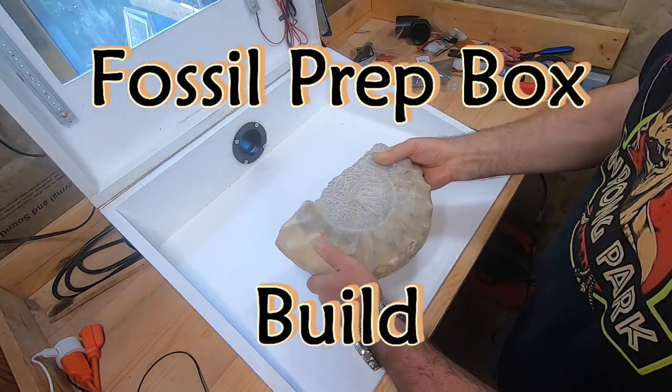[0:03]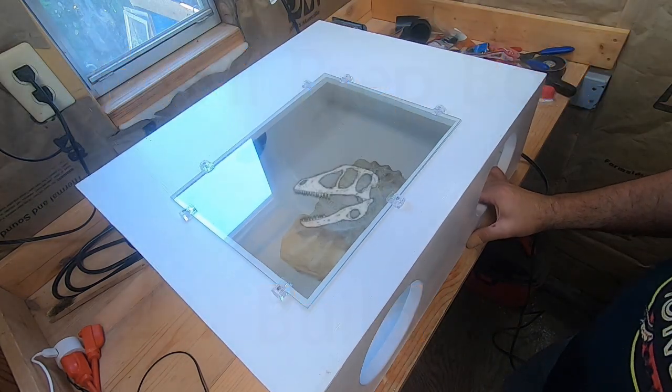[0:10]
Hello and welcome back. If you've been thinking about building your own fossil preparation box like this one, then stay tuned because I'm going to show you the steps and supplies that you need to build one.
In my last video, I showed you the considerations for the tabletop height for your prep area when you're working with a microscope. And I also made a test box out of cardboard to make sure everything was going to work. Test box was good. Height was good for working with the microscope. So now it's time to actually make the box.
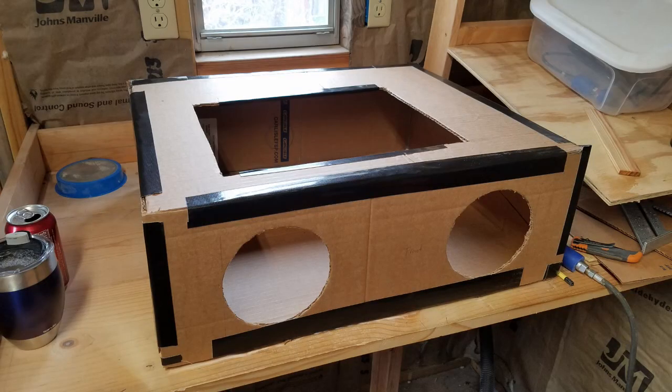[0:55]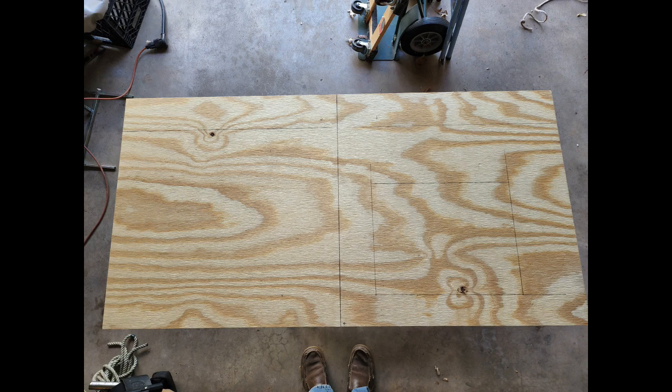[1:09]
The first step to creating your own prep box is to decide on the dimensions that you need. For the amount of space that I have available and the requirements while using my microscope, my box dimensions are 24 by 20 by 8 inches. For a box this size, it turns out that a quarter sheet of plywood is almost perfect. It winds up being a fraction of an inch shorter in length, but that was a trade-off I could live with to use a smaller and cheaper piece of lumber.
The plywood sheet will form the top and bottom of the box. Measure and mark the cut lines. Remember the old saying, measure twice, cut once. It might save you a return trip to the lumber store.
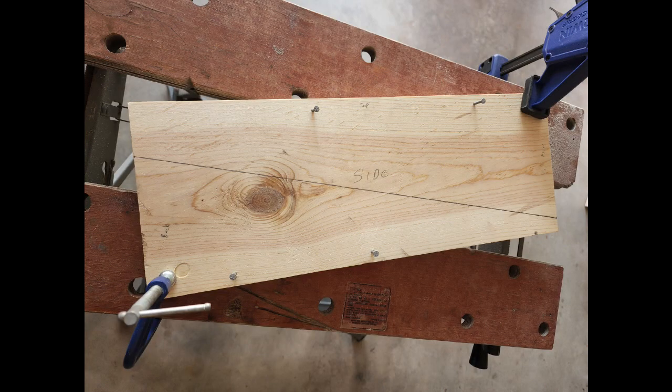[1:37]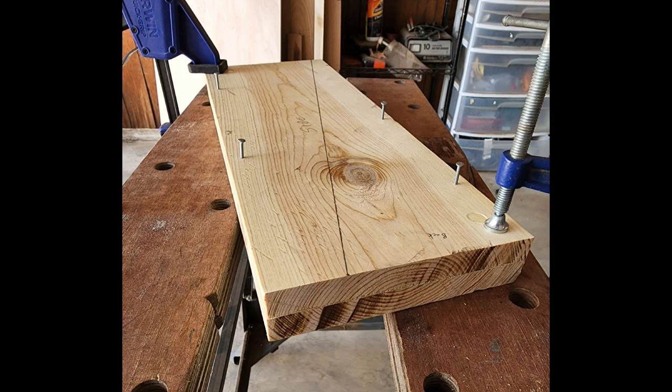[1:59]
Next, cut out your sidewalls. I started with a 7 by 18 and a half inch pine board. Because of the clamshell design of this box, you need to make sure that your side pieces are identical. If they aren't, you could have trouble with the top not closing completely, or you could have a large gap along one side. In order to make sure that my cuts were the same, I aligned the two sides, then screwed them together. As long as your screws are in the top and bottom half inch, you can use them for running assembly screws later.
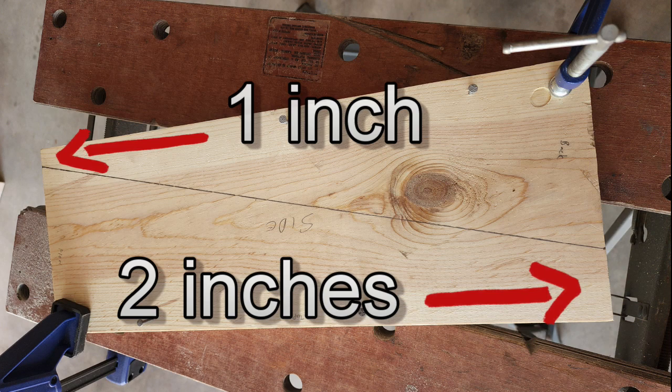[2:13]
My cut line marks are 1 inch from what will be the front bottom and 2 inches from the back top.
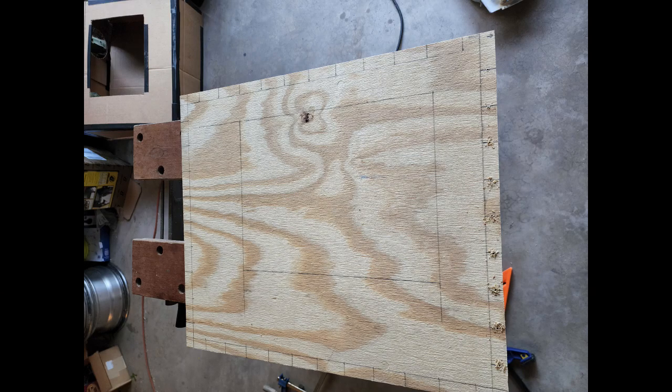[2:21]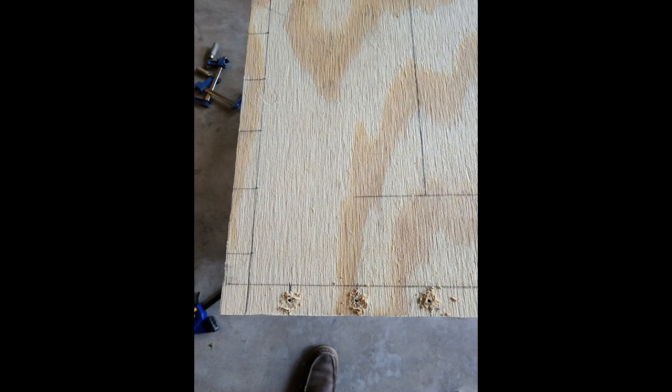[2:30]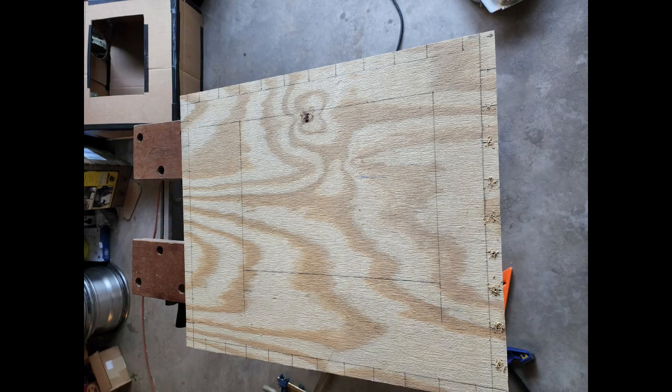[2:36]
I find it helpful to lay out and pre-drill the assembly screw holes in the top and bottom pieces. I started out with way too many screw holes on this side. You only need a screw about every 3 or 4 inches. I find the easiest way for me to get the holes centered is to mark out the width of the boards these will be mounting to. Fortunately, small mistakes like this can easily be filled with a tiny amount of wood filler putty.
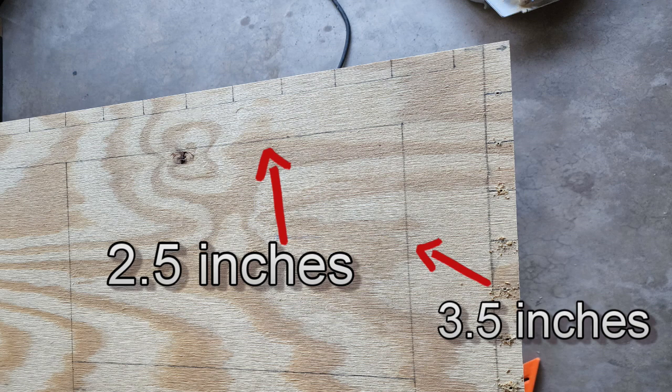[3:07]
I also marked out the cut lines for the viewing window. The easiest way is to lay your glass sheet where you want it, then mark the outside lines. Then measure about a quarter inch inside of those lines. I used a standard sized 11 by 14 picture frame glass for ease of replacement. My window is set 3.5 inches off the left side and 2.5 inches back from the front edge.
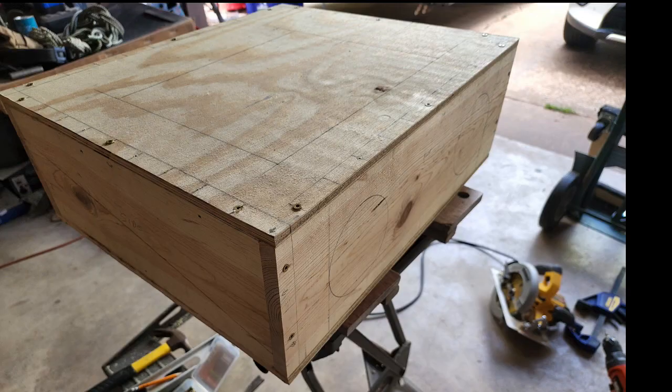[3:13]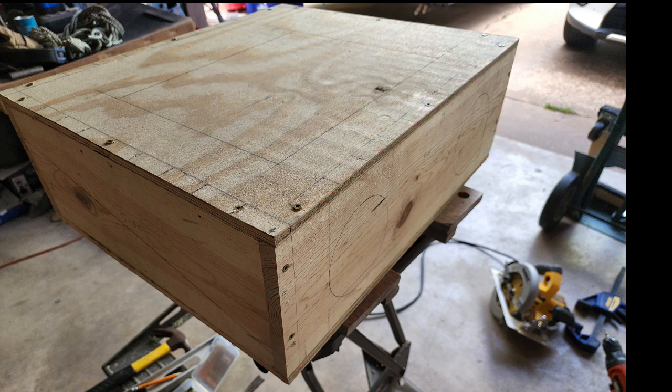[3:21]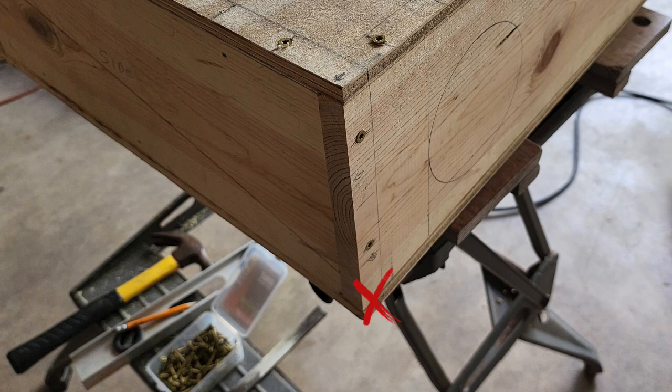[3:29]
The front face board is a single 24 by 7.25 inch piece. It should be mounted to the underside of the top of the plywood and to the front of the side pieces only. If you screw it to the lower piece of the side panels, it won't be able to open.
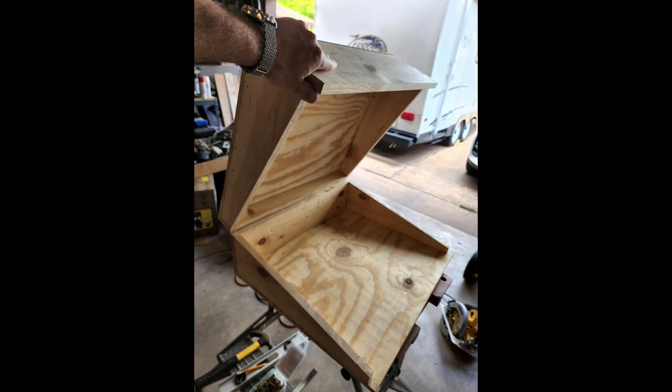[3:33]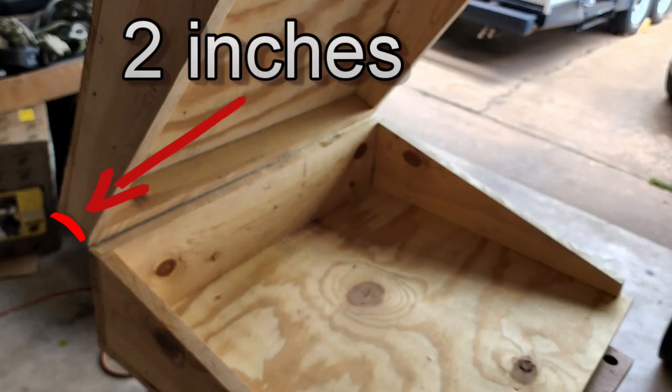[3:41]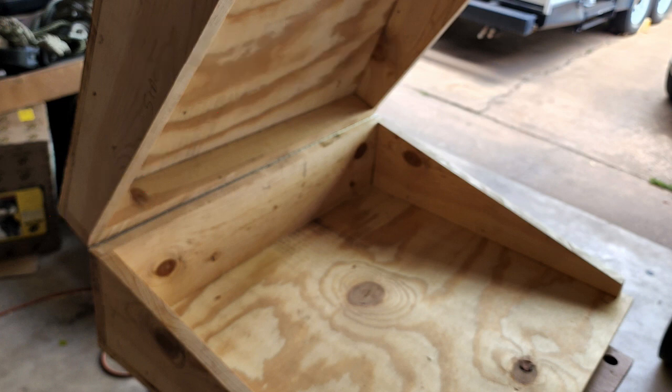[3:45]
The back hinged panel is the same dimension as the front, but you will cut it lengthwise 2 inches down from the top edge. This will mirror the back end of the side panel cuts. Assemble the top and bottom of the hinge panel to the top and bottom portions of the box like this.
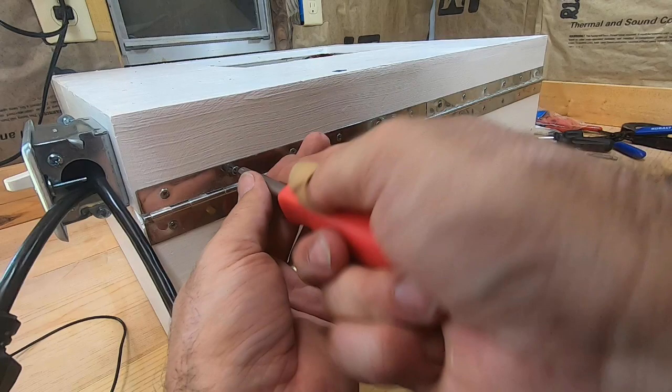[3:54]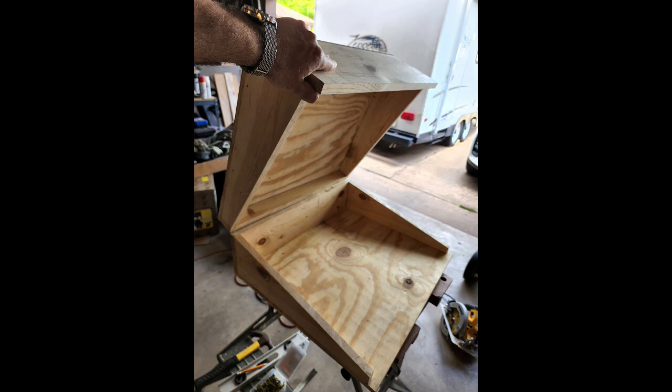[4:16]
When mounting the piano hinge, be sure to carefully line up the center of the hinge on the cut line of the panel. Start by loosely mounting 2 or 3 screws in the top and bottom mount holes and make sure that the box will open and close properly. Tighten the first screws down and again check the operation of the hinge, loosen and adjust if needed. Once the lid opens and closes smoothly, then mount the remaining screws. Don't worry about tightening them down all the way just yet. If you plan on painting the outside, you will want to remove them anyway.
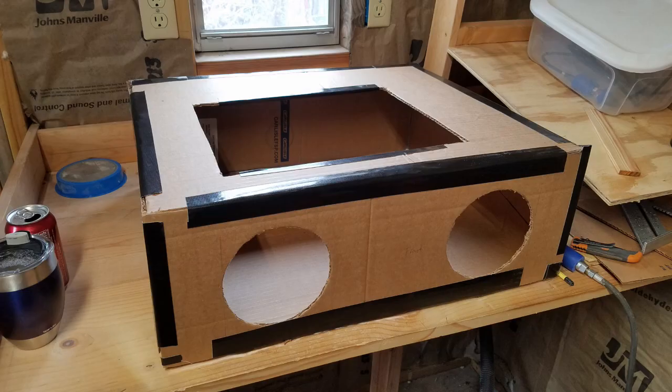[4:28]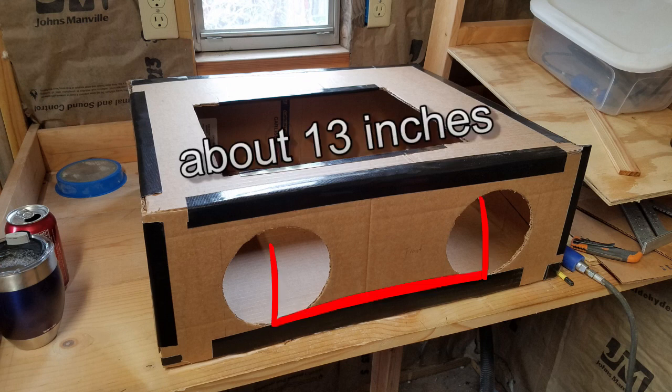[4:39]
Next, plan where you want your armholes to be. Since this is a rather shallow box, there isn't really an up and down decision. You want to make sure that the holes are spaced apart to be comfortable to rest your arms in them. If the holes are too narrow or too wide, it will be very uncomfortable to use the box for long durations.
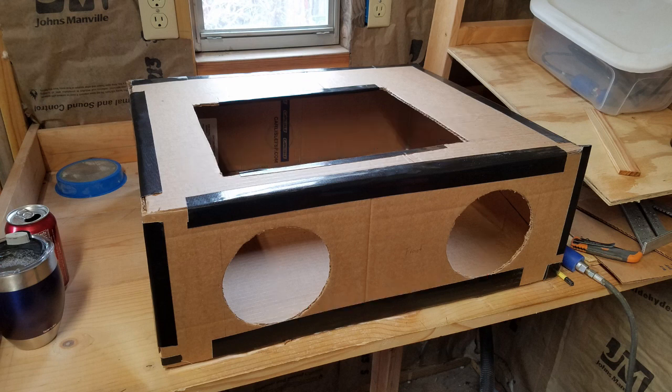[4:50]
The diameter of the holes depends partly on your needs and partly on what your end design will be. If you are just leaving the holes bare, you can make them whatever size you want, as long as they fit the board. You should leave about 1 inch on the bottom, since the front panel is also the closing lip of the box. If you are planning on using pre-made blast cabinet sleeve mounts, then use those as a template for marking the cutting line. Just make sure they are centered on your armhole dimension measurements.
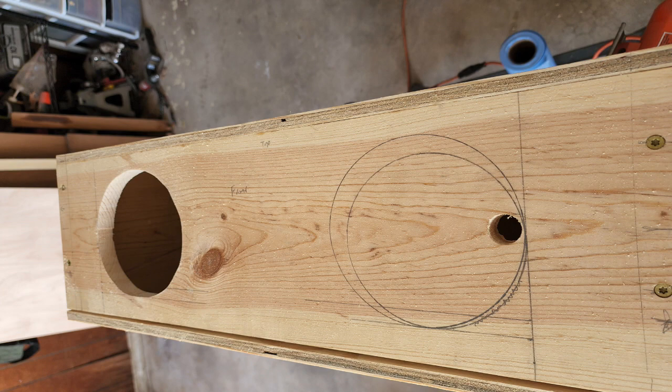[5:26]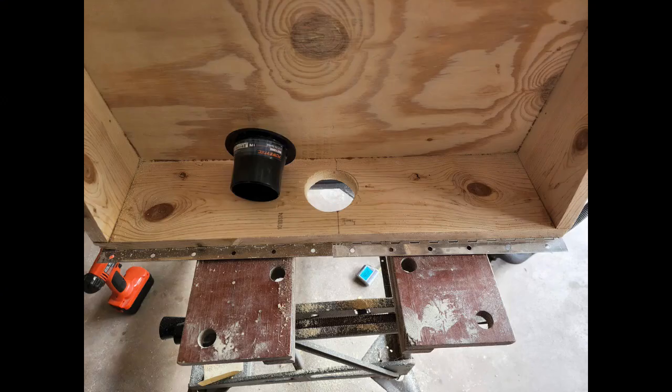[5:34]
Start by drilling a hole on the inside edge of the cutout. You can use this as a starting place for your saw to cut out the holes. You will need to cut a hole for the vacuum attachment at the rear of the box. Roughly centered in the rear panel, but exact location isn't important. You can put it anywhere along the back or side of the box that works best for you.
The shop vac hose mount I used was 2.5 inches outside diameter, but slightly flared near the base, so make sure to take the wider size into consideration, or you can use a round file to widen the hole a little bit more to allow it to fit. My shop vac hose end fits perfectly inside this mount.
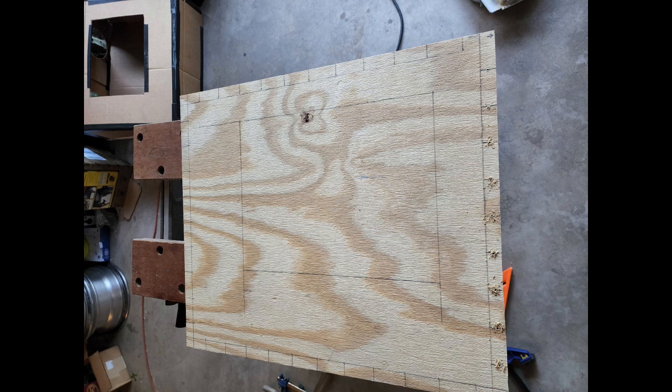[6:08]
Lay your glass plate over the cut lines you marked and ensure you have enough of a lip for the glass to sit on. Once you're satisfied with your cut marks, you can use the same starting hole method from the arm mounts to cut the window space. It will be easier to put a starting hole along each side of the viewing window rather than try and turn your saw blade inside the corner while cutting.
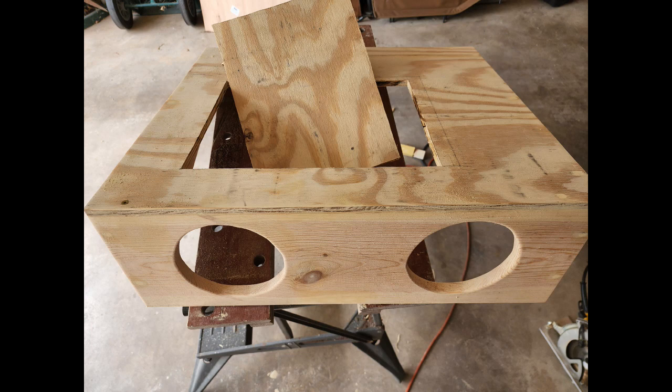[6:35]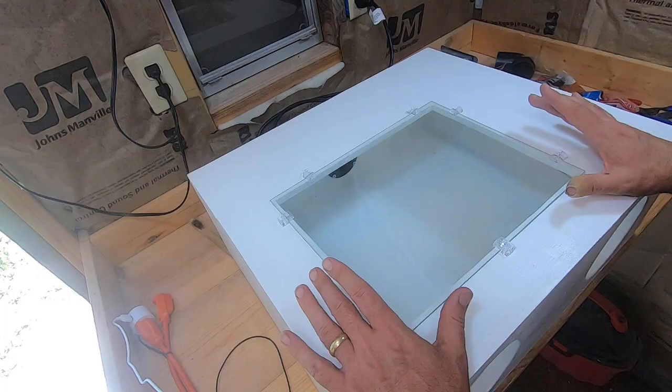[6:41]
Once you're happy with the construction, take a flat file and lightly round off all the edges and then sand to prevent splinters. At the very least, you should paint the inside of the box with white paint. I went with a low gloss pure white. This allows the most light reflection inside the box, but it won't have a glare or a shine. I chose to paint the whole box. The paint also seals the wood to prevent swelling or shrinking from moisture changes.
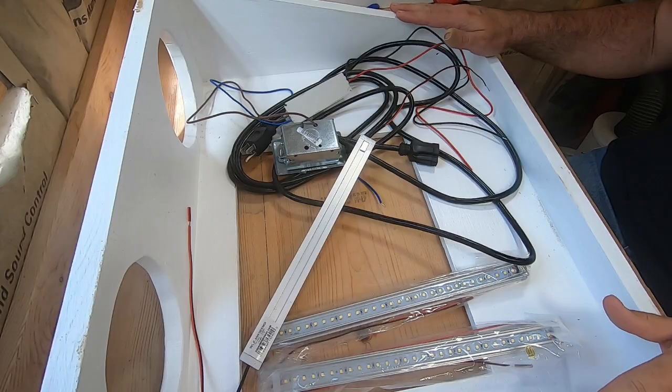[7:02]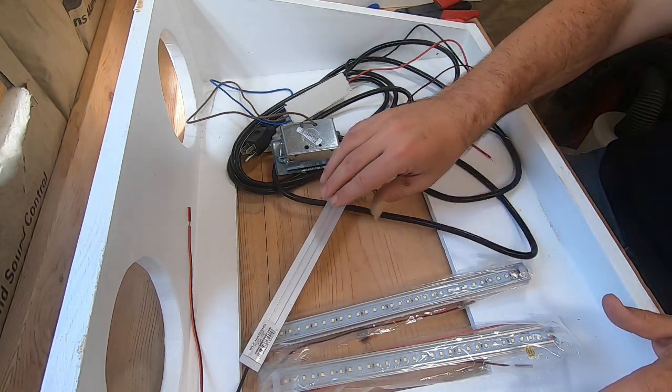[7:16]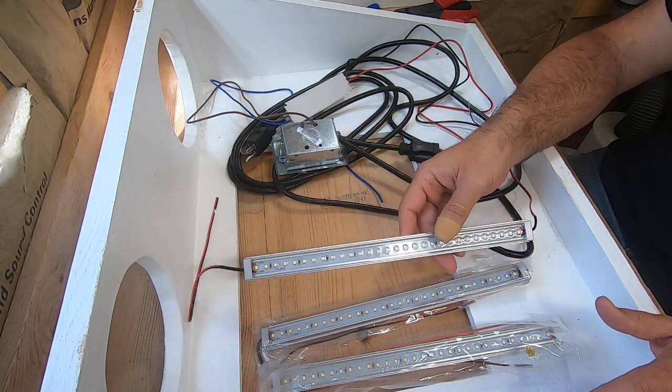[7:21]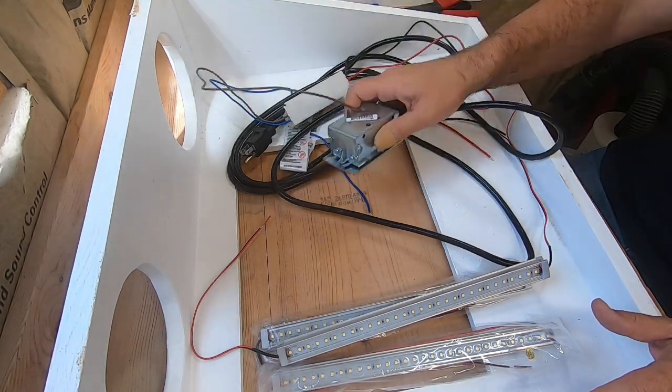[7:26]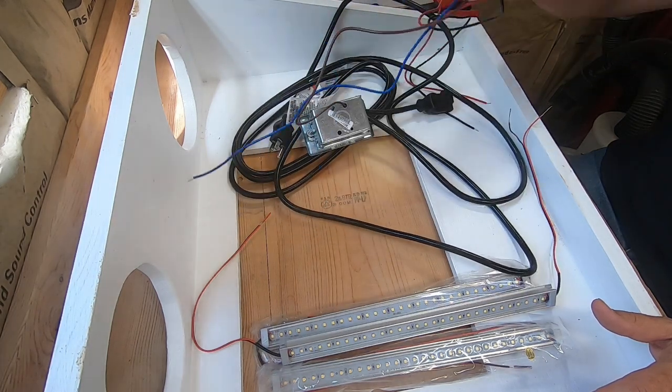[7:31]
Now that we have the box build complete, it's time to start putting all the components into it to actually make it a functioning prep box. I'm going to show you some of the parts that I'm using. I have three of these LED strips that are going to go inside, and this is a power converter for the LEDs. And I will show you how all this goes together.
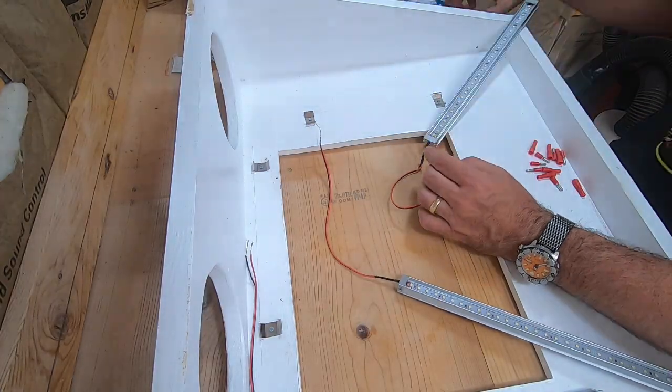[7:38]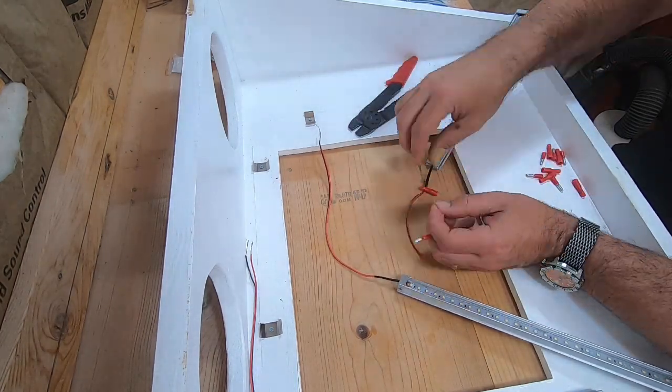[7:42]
Start by stripping the ends of the wires. You can make these direct connections if you wish. I used bullet connectors to allow simple removal and replacement if needed. The connectors simply crimp onto the stripped wire ends.
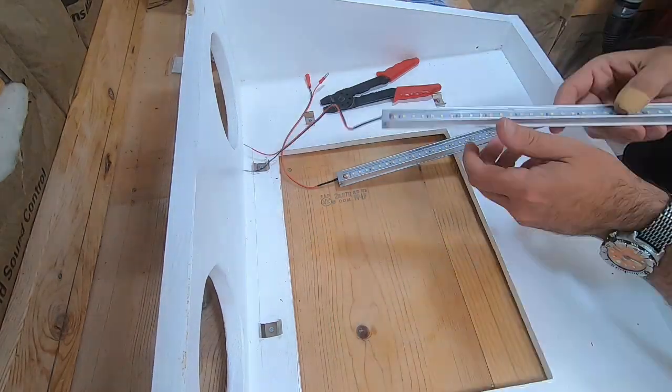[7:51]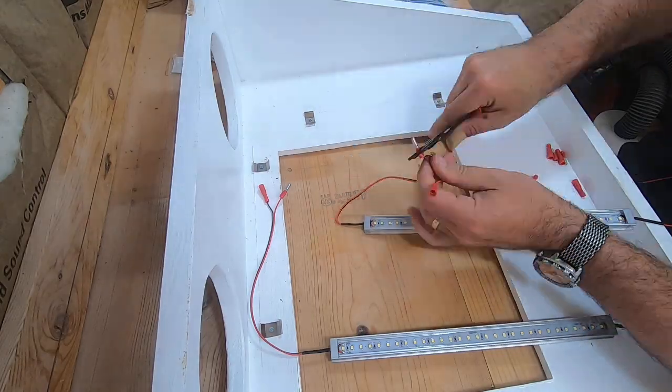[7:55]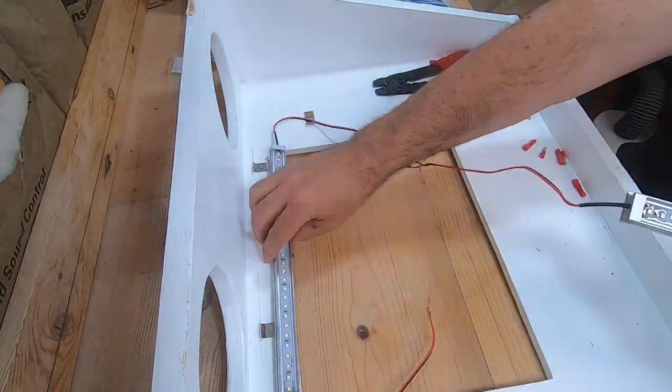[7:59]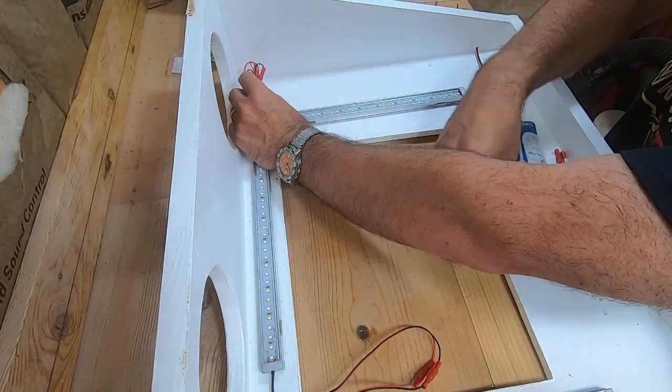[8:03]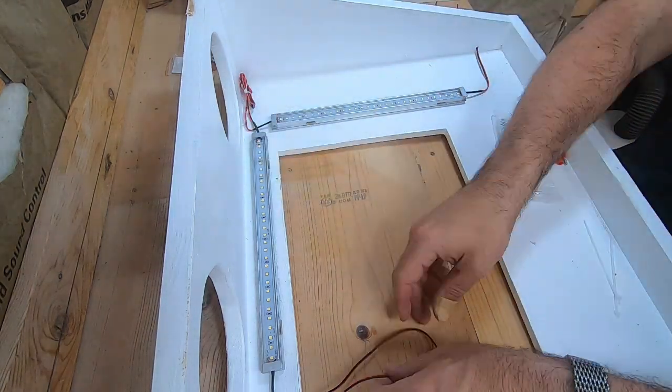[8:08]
Lay out the light strips where you want them mounted inside the top lid. Mark the edges, then use those lines for the light mount placement. I placed my lights at the front and sides of the viewing window. Excess wire lengths can be bundled and zip tied out of the way rather than worrying about making the wire lengths perfect.
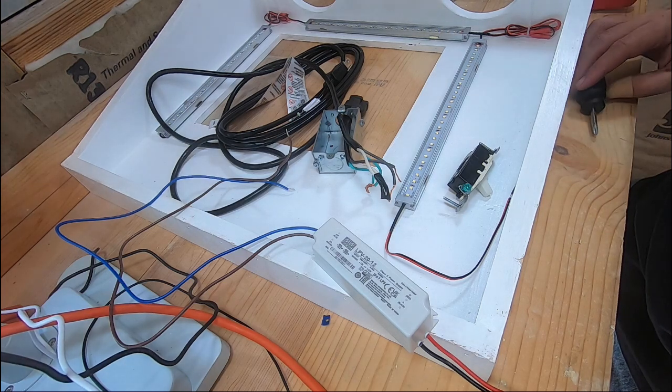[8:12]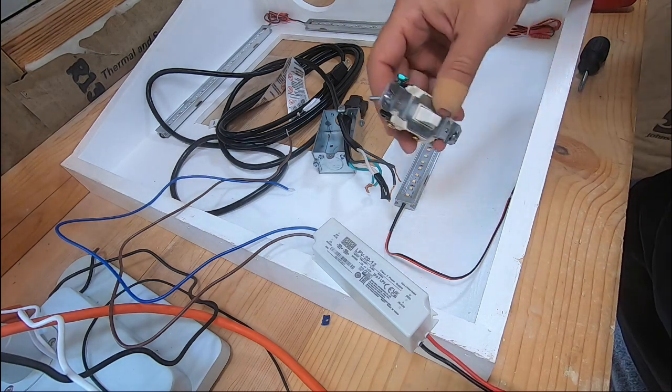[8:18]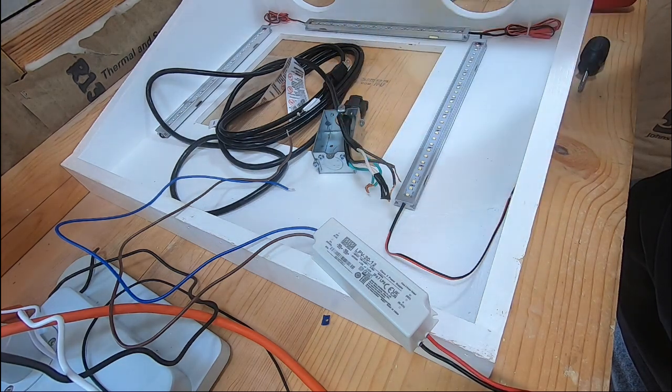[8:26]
One thing I'm doing with this box, which is the same that I did with my Harbor Freight blast box, is I want a switch on the side so that when I flip it, I have internal lights and vacuum power at the same time. And I'll show you how to do that, because this is probably one area that would freak most people out.
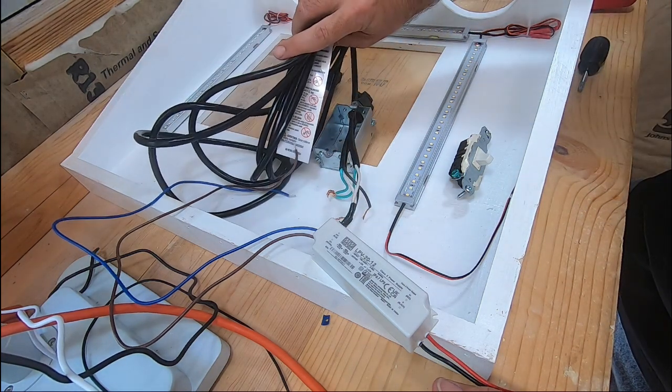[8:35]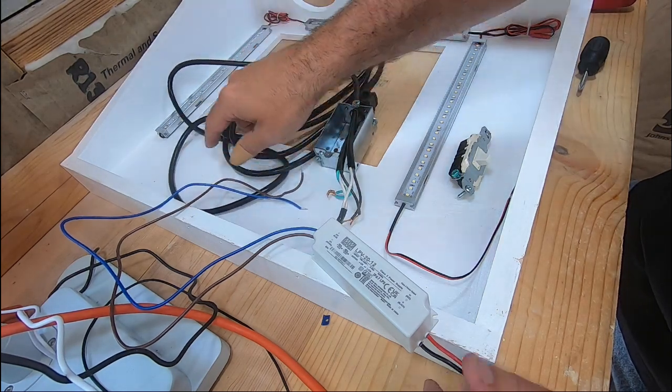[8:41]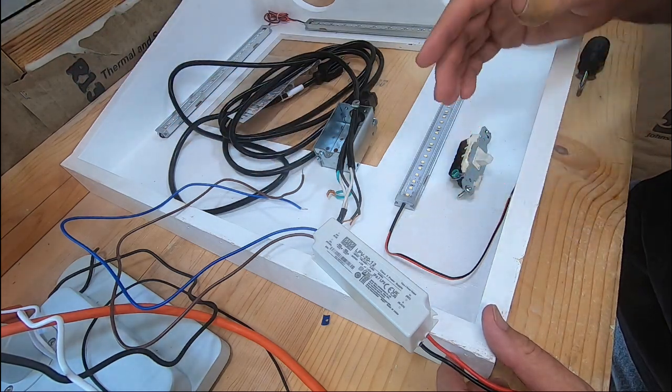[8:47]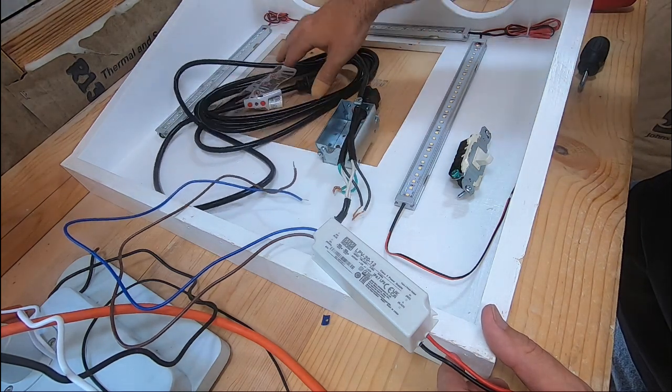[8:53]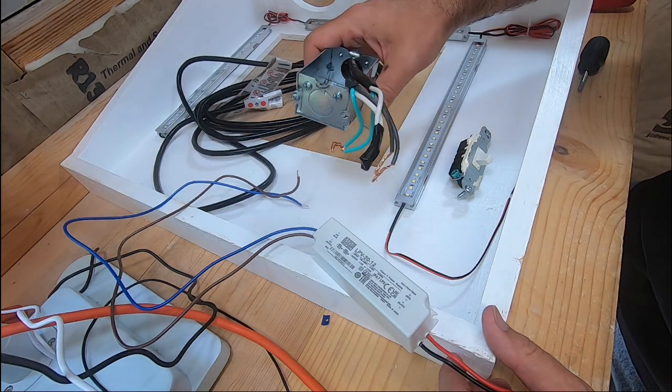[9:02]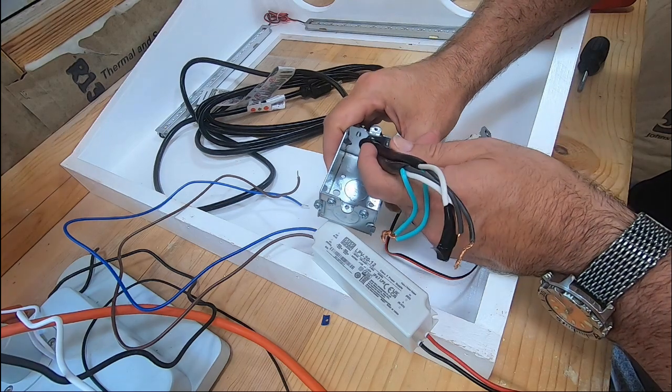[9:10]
This is an extension cord. This is probably way longer than I need, since my plug-in for right now is probably 12 inches away from the box. But if I ever need to move the box anywhere, I've got a 15-foot extension cord. I got plenty of room. But this is a 14 gauge extension cord. It's made for shops, so it's made to power a little bit more than just a standard desk lamp. You don't want to use those cheap Walmart brown flat extension cords. That's not going to work for you.
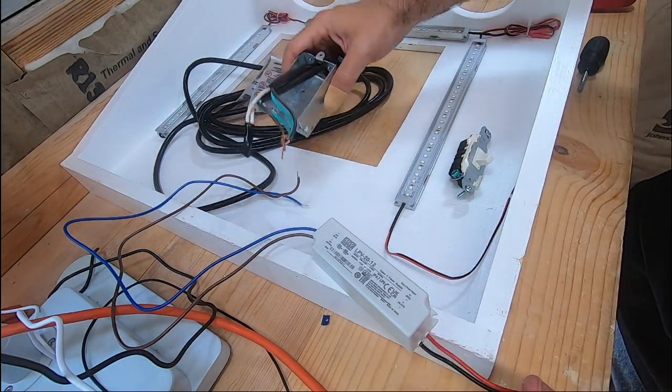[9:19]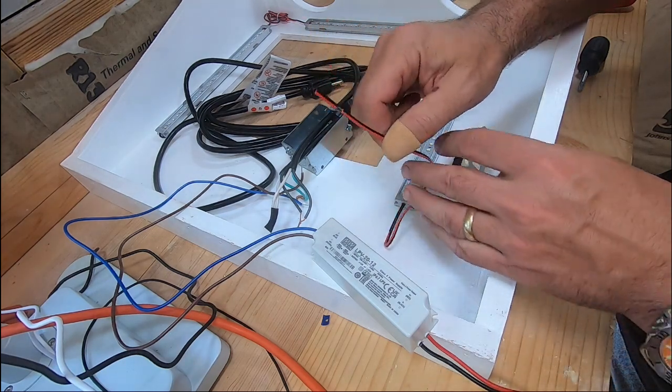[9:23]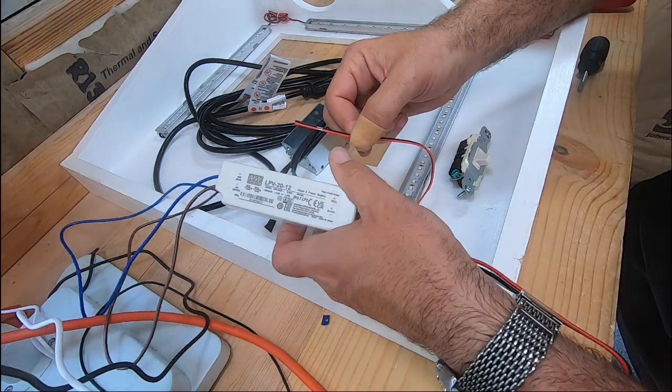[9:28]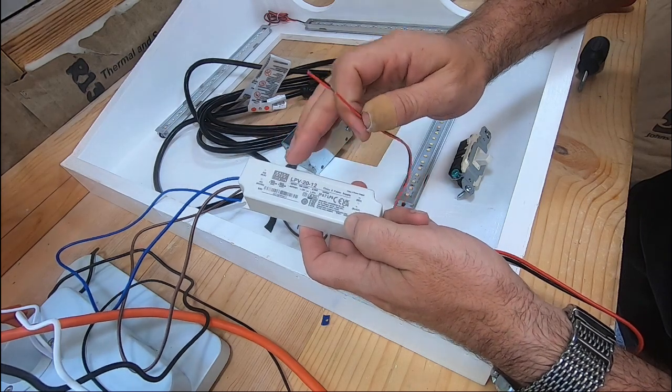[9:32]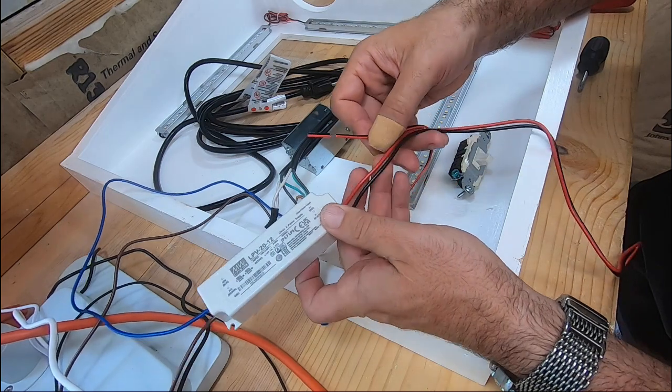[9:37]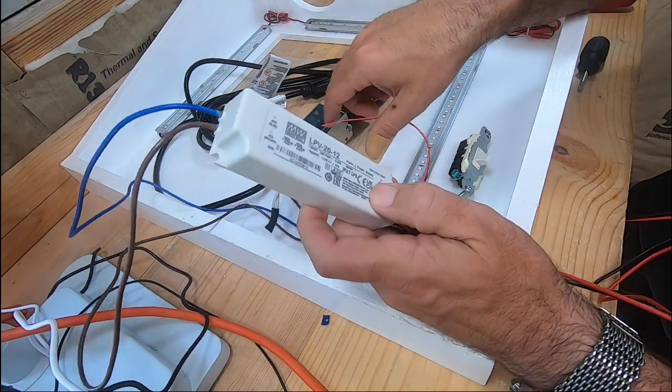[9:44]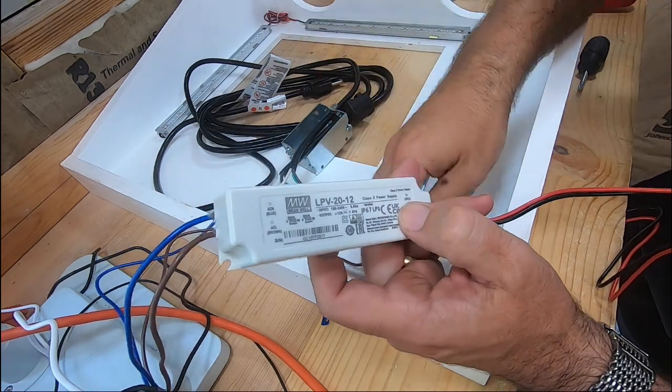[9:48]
So, working backwards from here, the lights, they've got the red and the black wire. This is your power supply that converts your AC current down to your 12 volt current for your lights. And it has a red and black wire too. So just like hooking the lights up, red to red, black to black. These go out to your power supply to your AC.
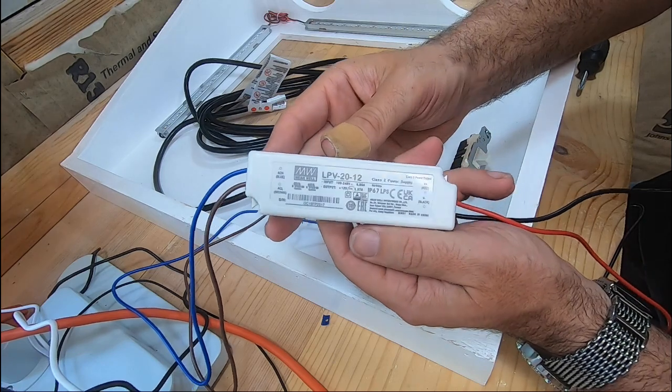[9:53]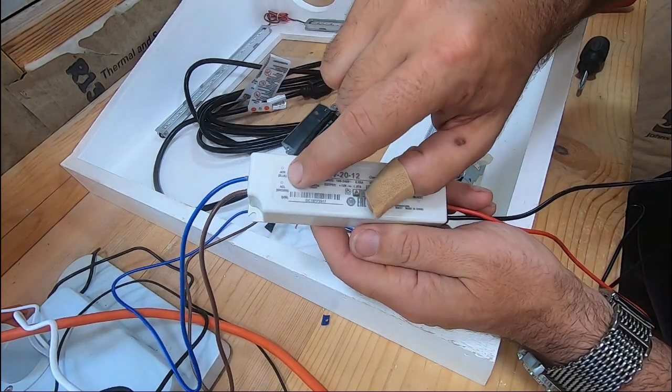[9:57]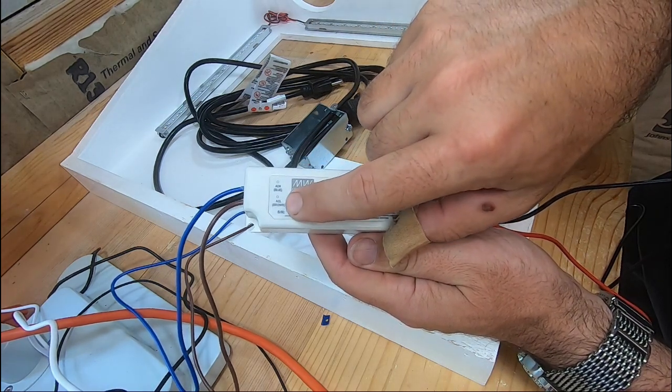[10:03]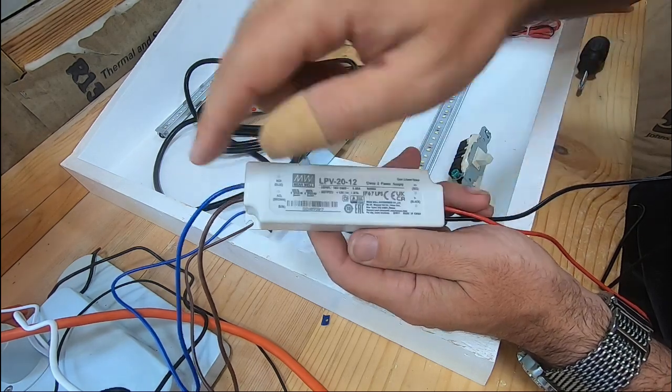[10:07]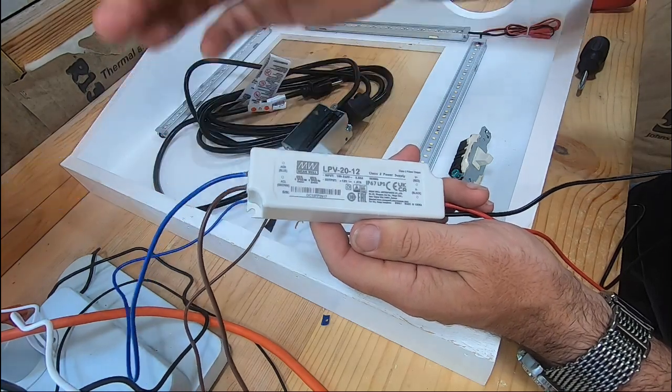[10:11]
I'm not sure how well that's showing up on camera. It's labeled here on the box. Blue is your alternating current neutral, and brown is your alternating current with the load. So your brown is your hot wire, blue is your neutral wire.
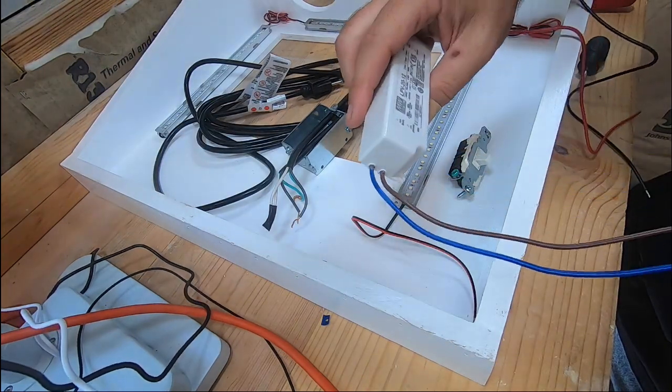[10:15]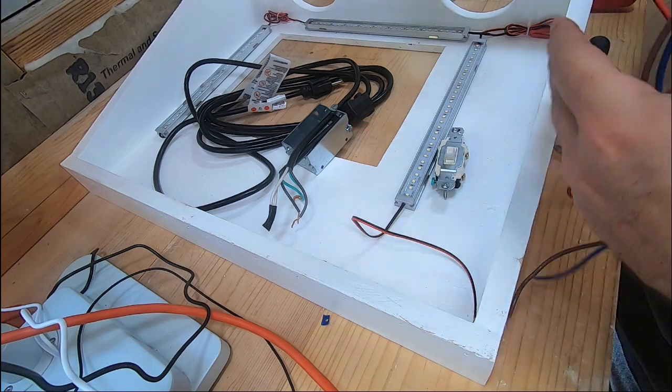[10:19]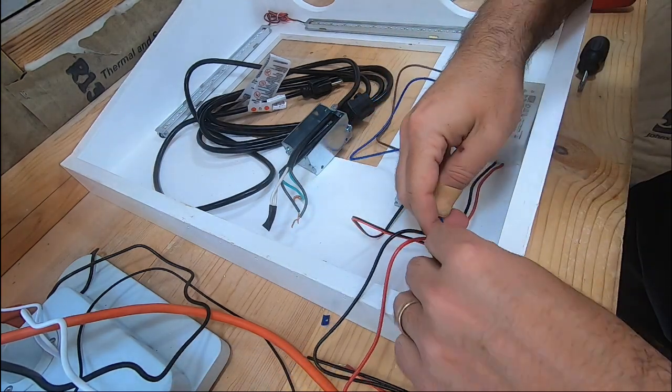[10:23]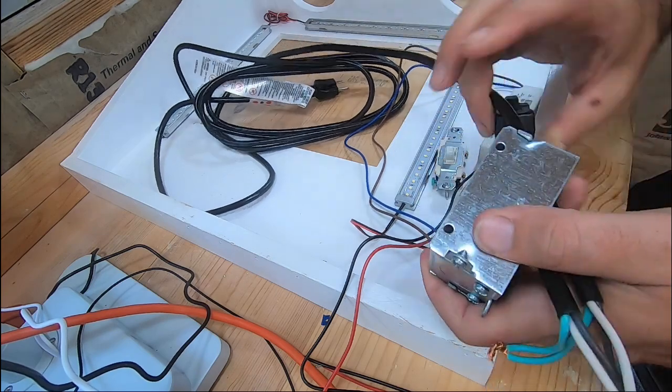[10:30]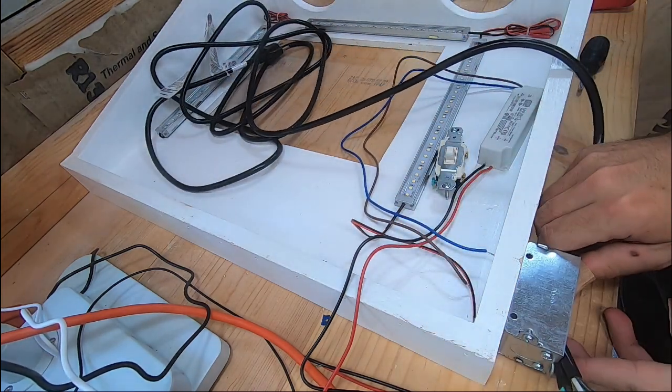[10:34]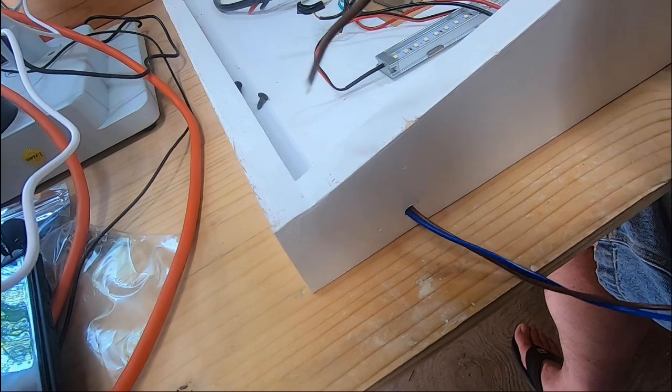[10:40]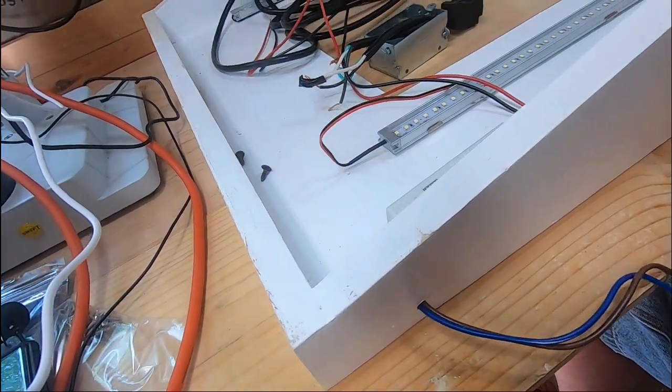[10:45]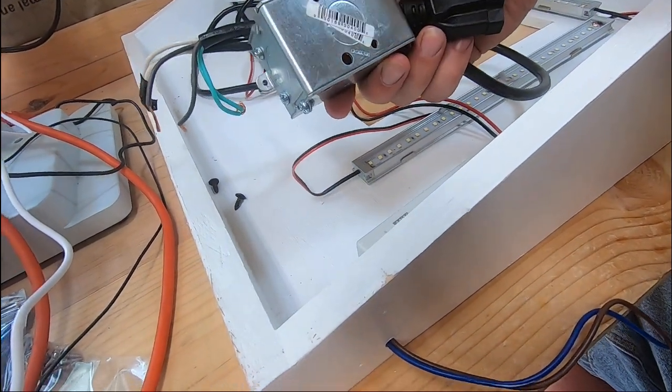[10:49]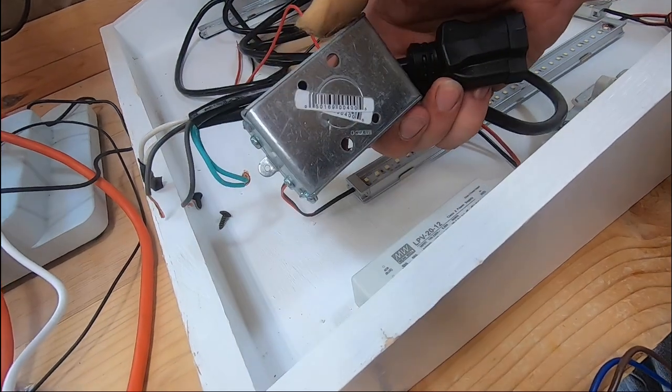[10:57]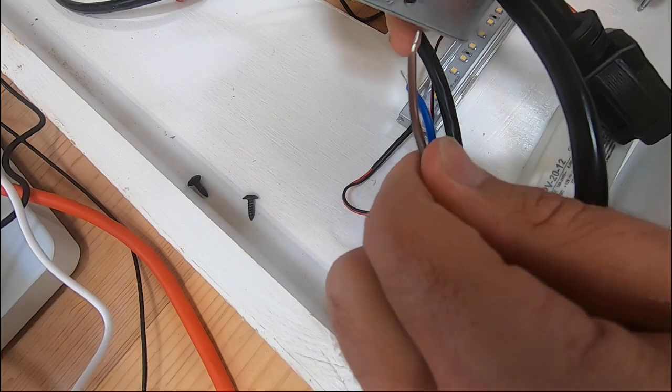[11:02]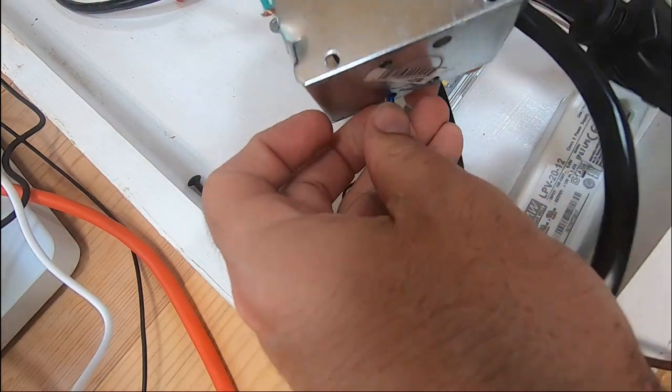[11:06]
So this will be mounted inside the box here. And run the wires. I've got a hole drilled here. The power box is going to be mounted here like this. All right, so you run the wires out through the box. And those are going to go, for me, into one of these holes on the back side. My wires are small enough I didn't have to knock out the plug on there. Okay, so my wires are going to go in through this handy access hole.
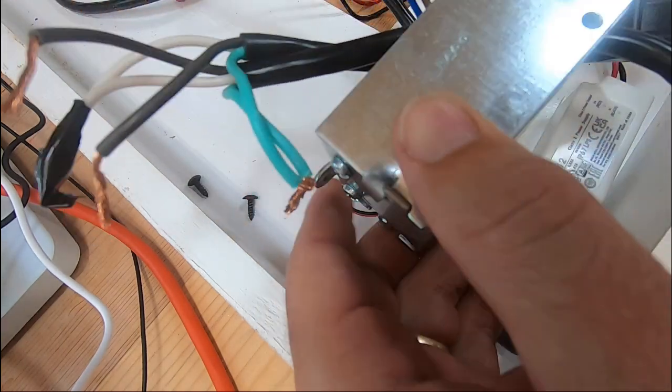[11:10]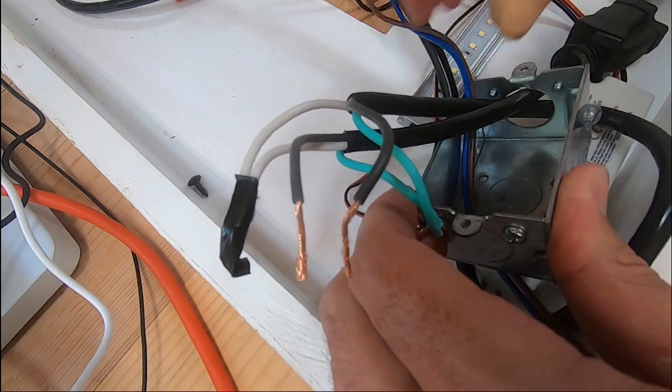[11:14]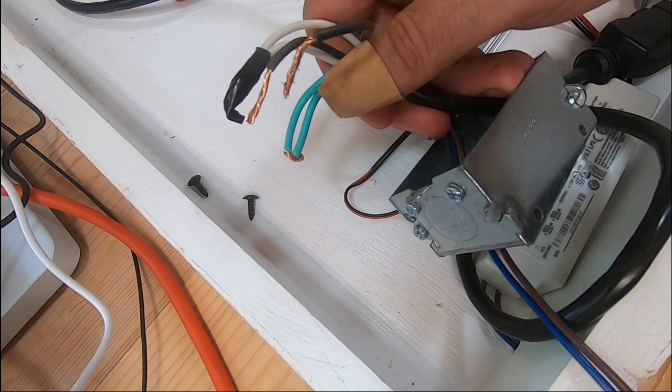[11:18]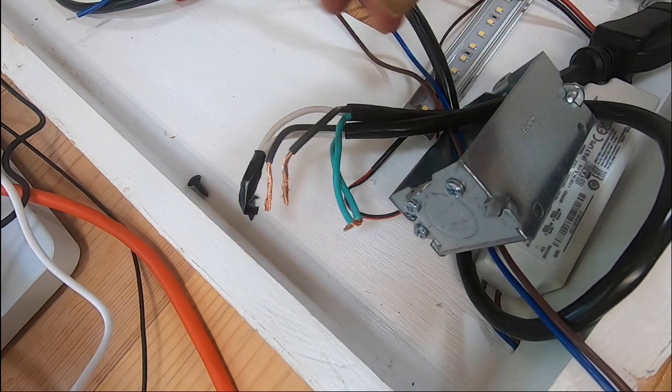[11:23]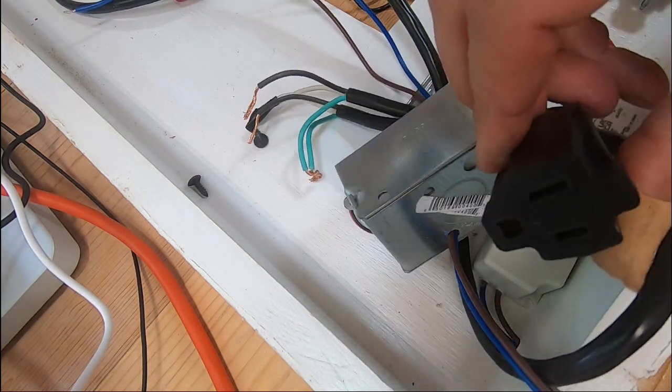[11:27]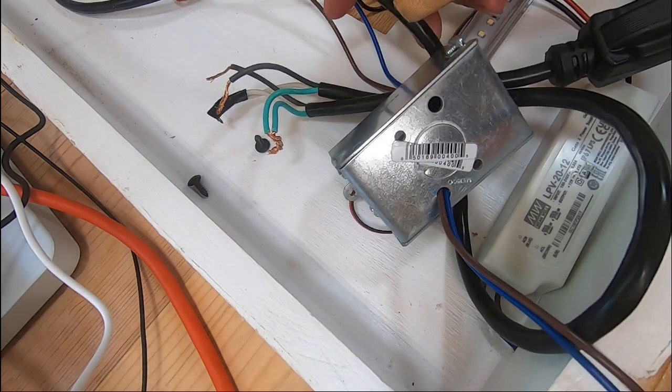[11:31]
Okay, now since I want to be able to plug my shop vac in, I don't want to hardwire my shop vac into here. I just want to be able to plug it in. So I'm giving it a little pigtail plug. And all I did was I took this extension cord and I cut the end off of it here. I've run it in.
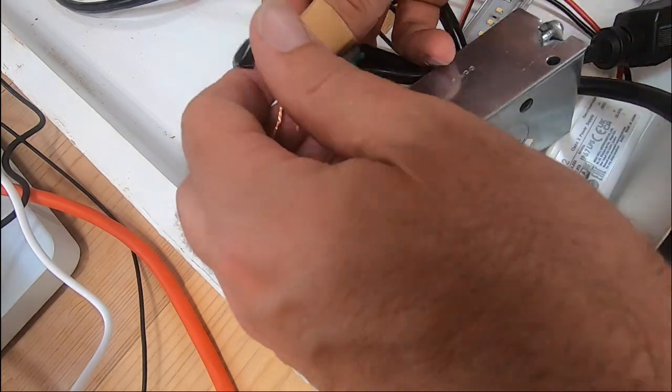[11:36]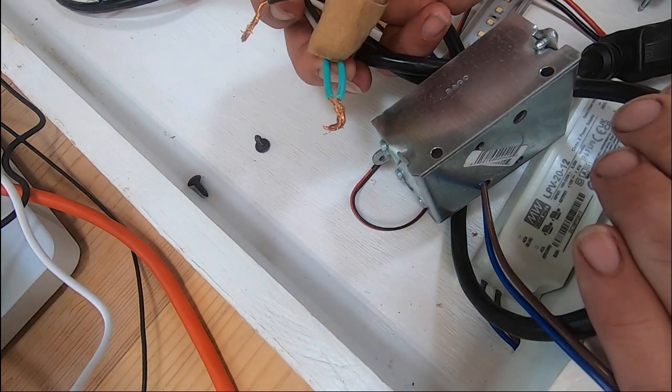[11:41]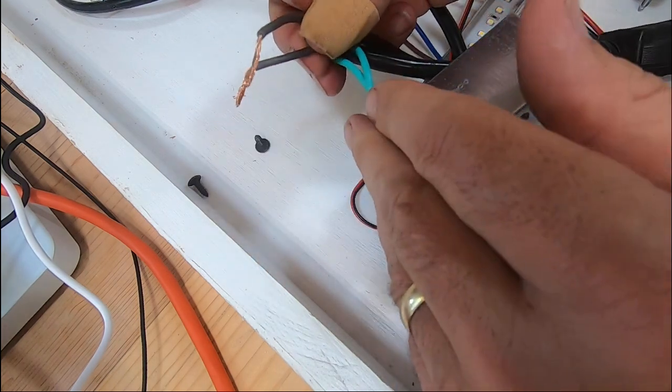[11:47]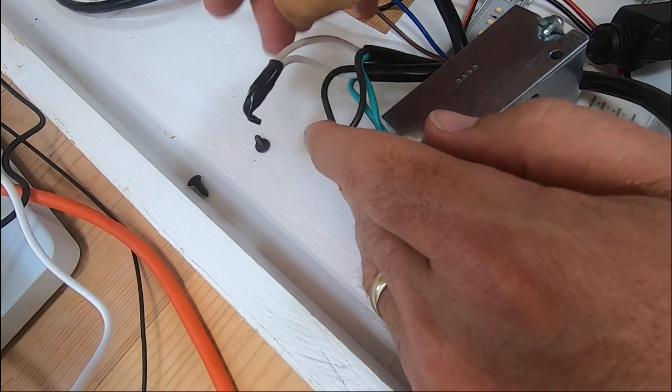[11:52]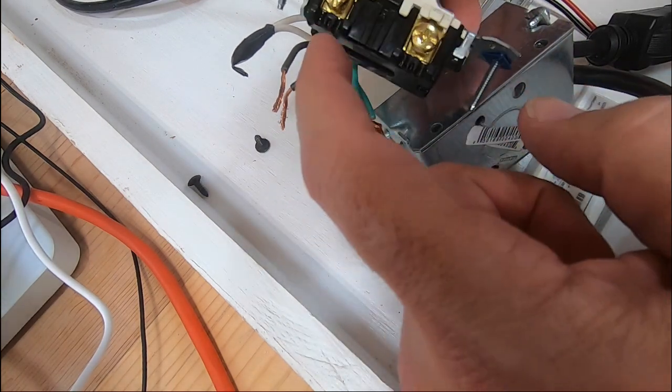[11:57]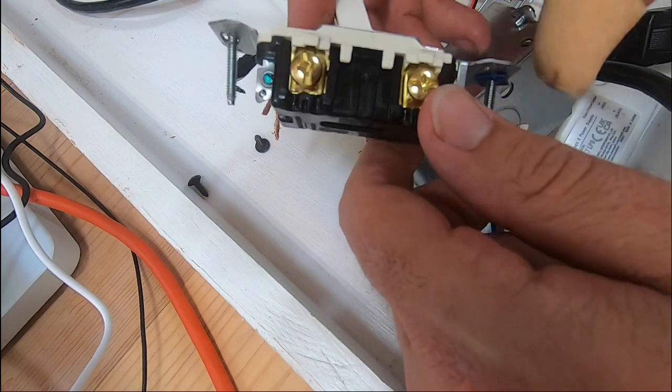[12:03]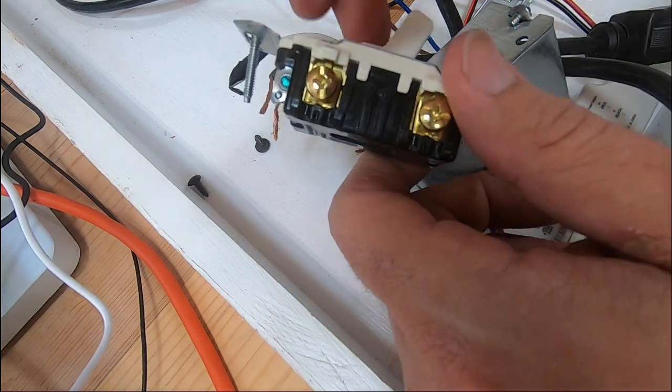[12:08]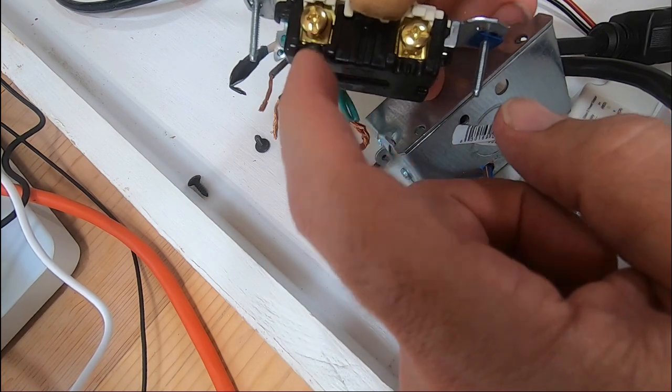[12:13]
So you're going to have three wires in here. Your green, that's your ground wires. Your black, those are your hot wires. And your whites are your neutral. And all you are doing with your switch is you're connecting. This is a single pole, single throw switch. It just has two positions, on or off. So all you're doing is you're going to connect a hot to this side and a hot to that side,
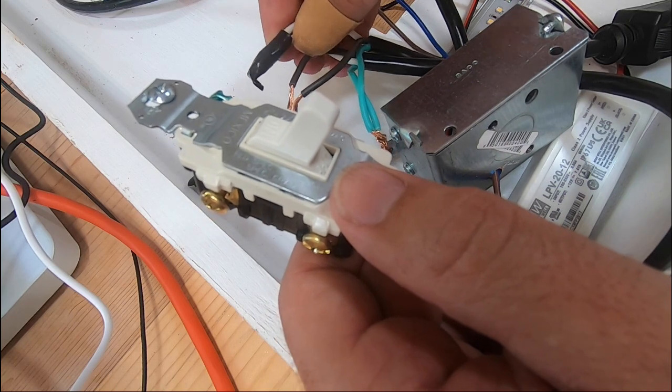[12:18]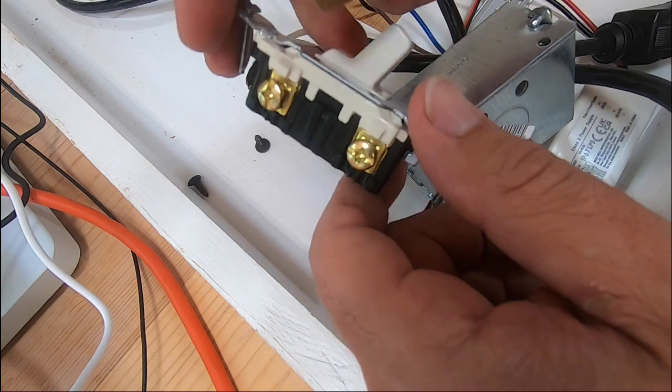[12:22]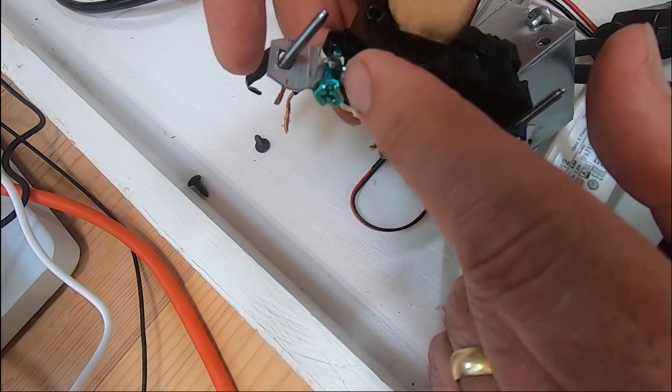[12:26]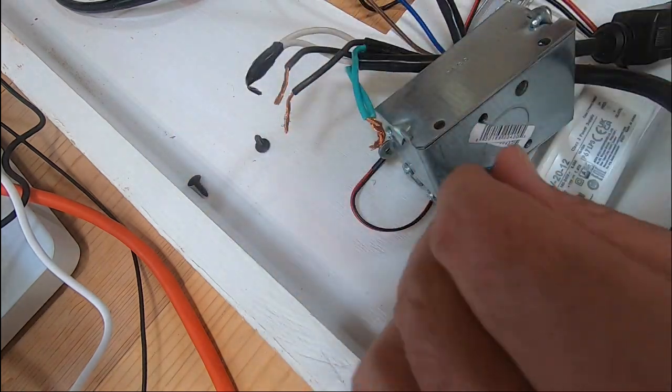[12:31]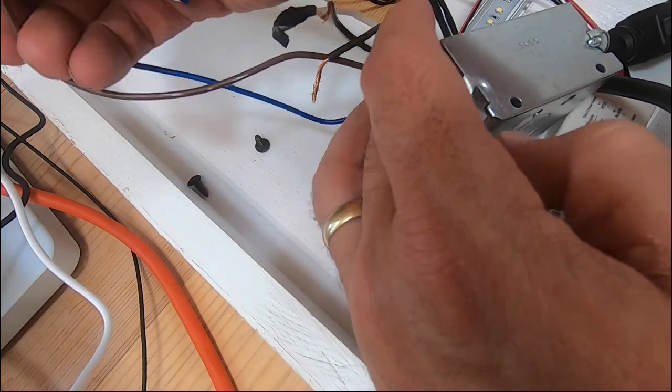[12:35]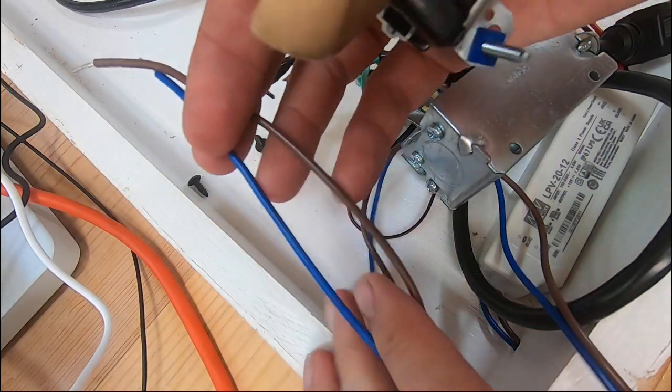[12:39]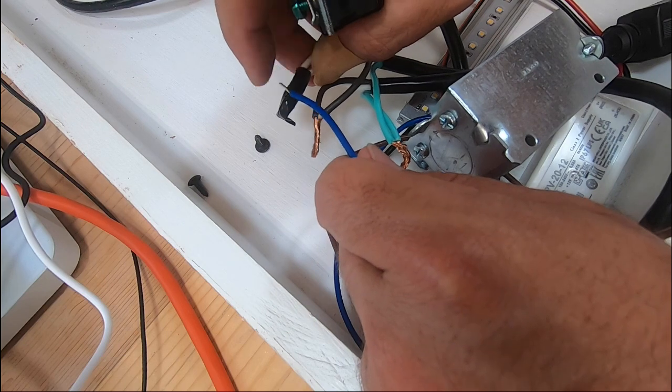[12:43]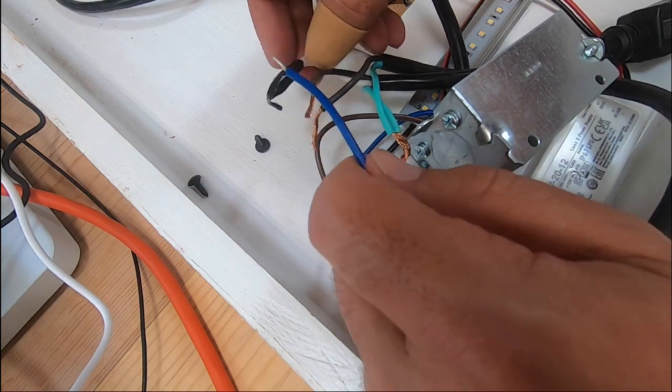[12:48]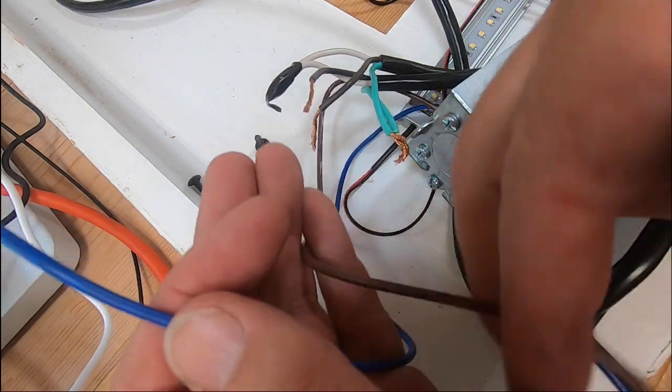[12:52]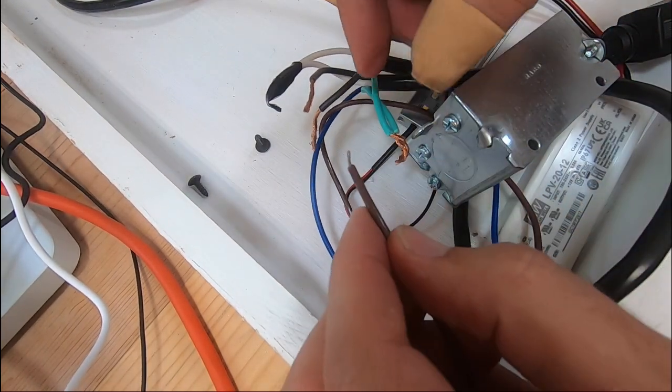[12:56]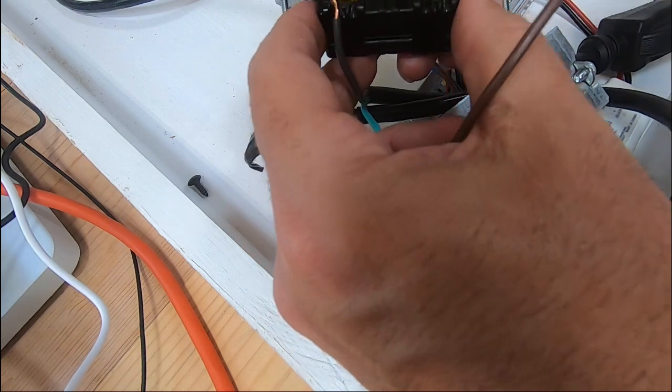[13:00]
and then wire your neutrals together, and then your grounds, they'll go together here under the, they're held down with this screw. And then your neutral goes in here with these. I have this taped up because I was playing with this earlier, just making sure everything was working. So this goes into your hot. Put that up in there behind that little plate.
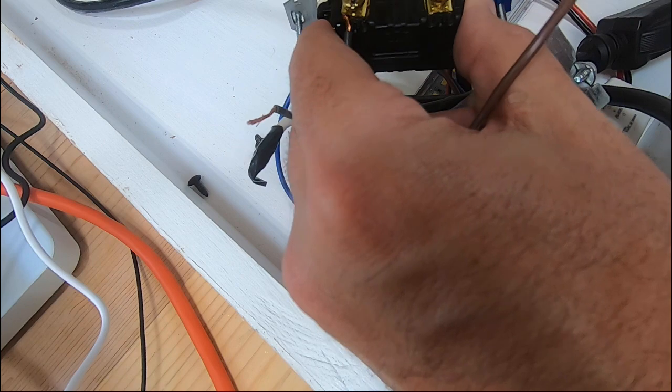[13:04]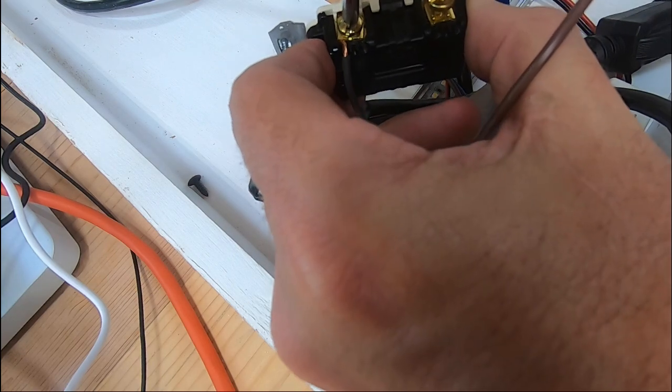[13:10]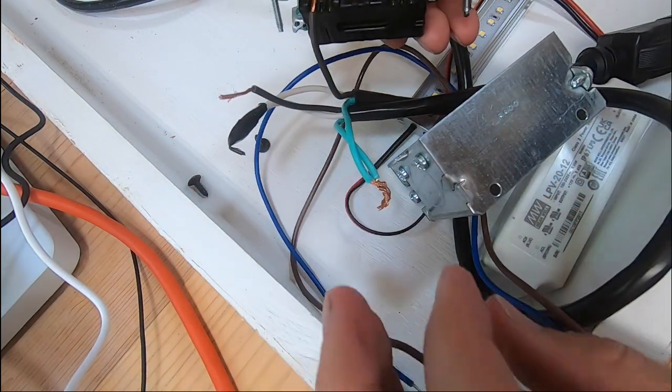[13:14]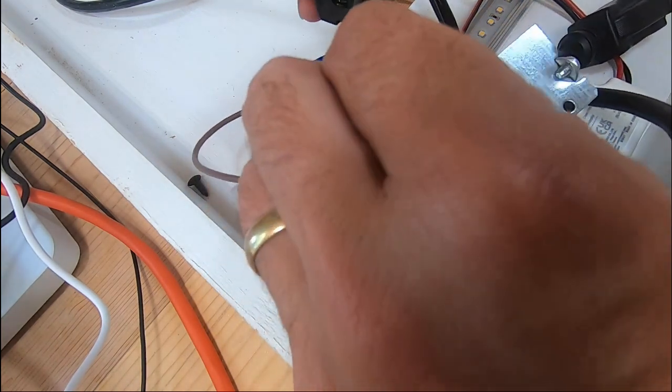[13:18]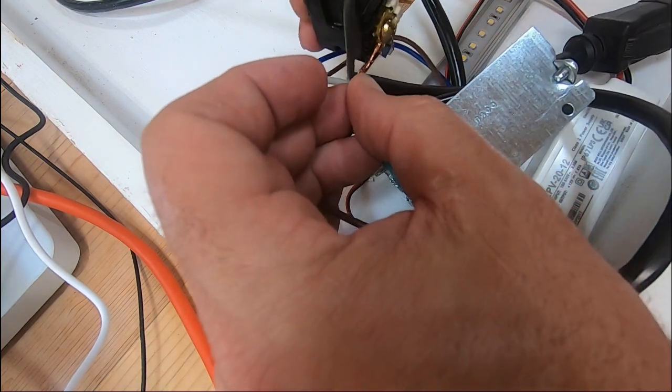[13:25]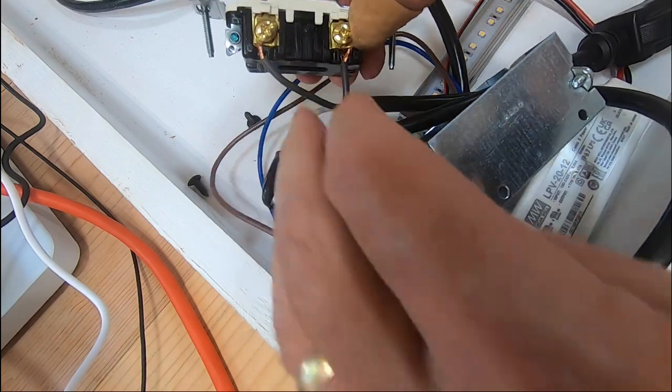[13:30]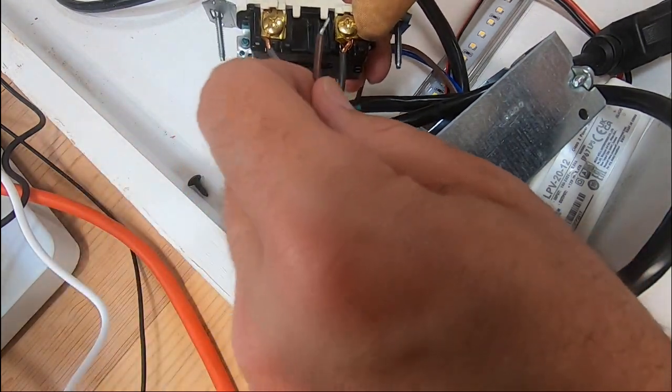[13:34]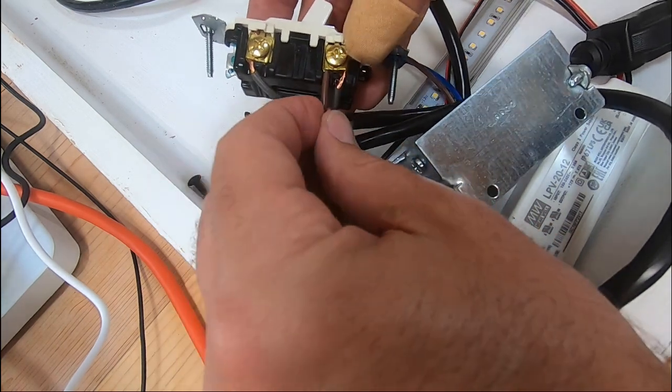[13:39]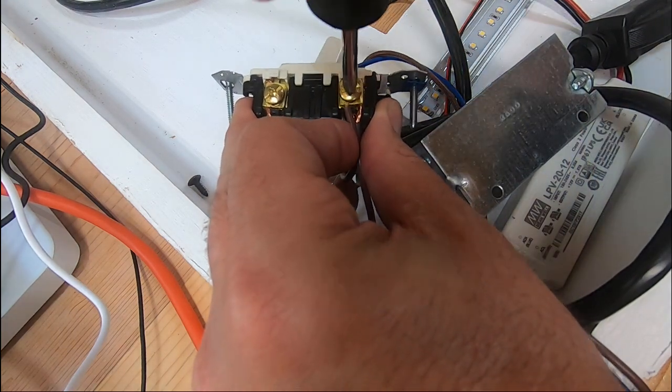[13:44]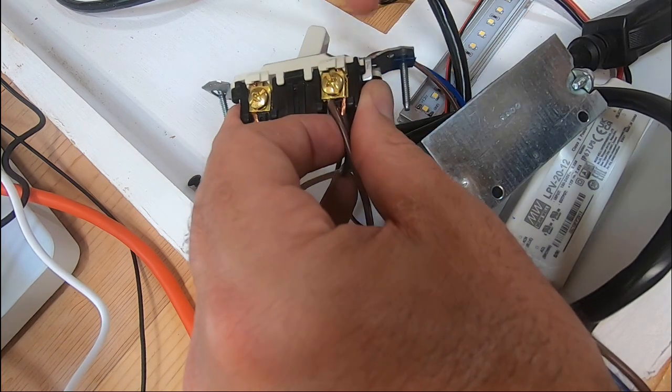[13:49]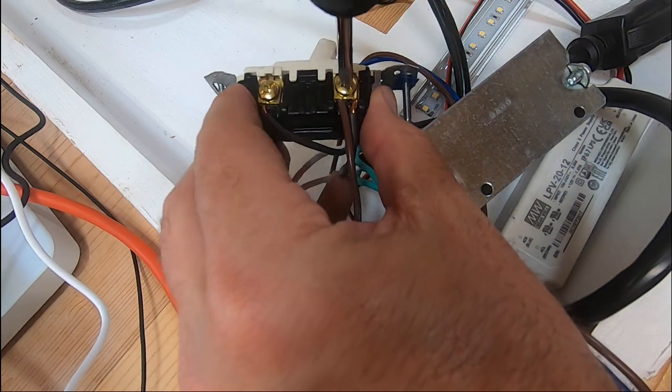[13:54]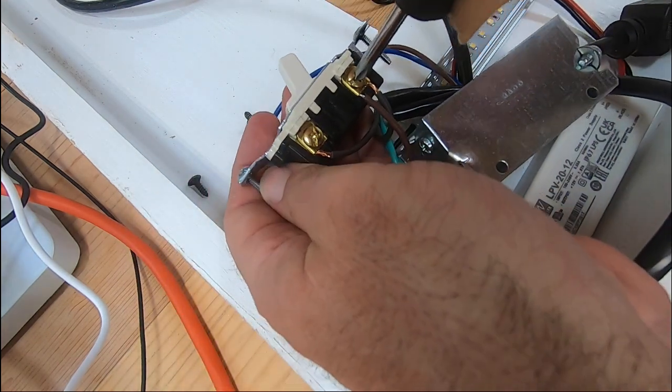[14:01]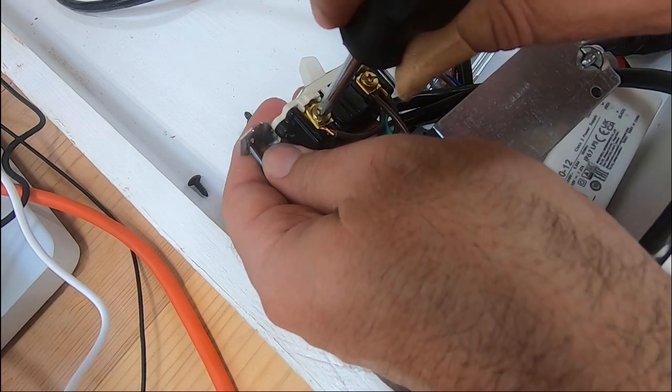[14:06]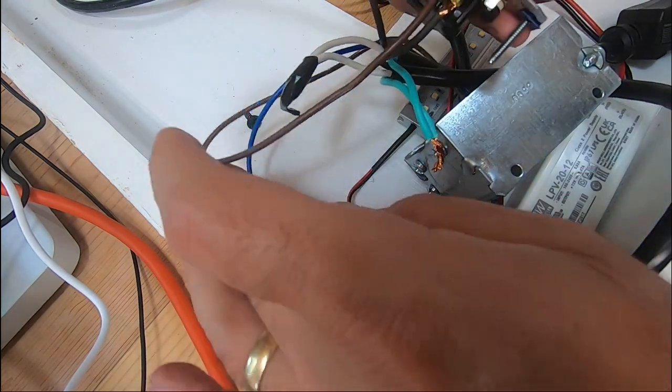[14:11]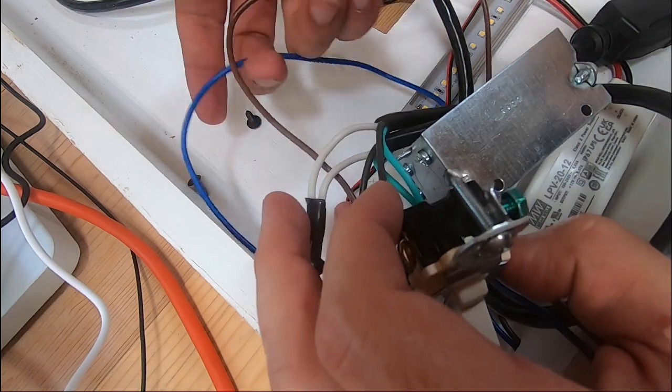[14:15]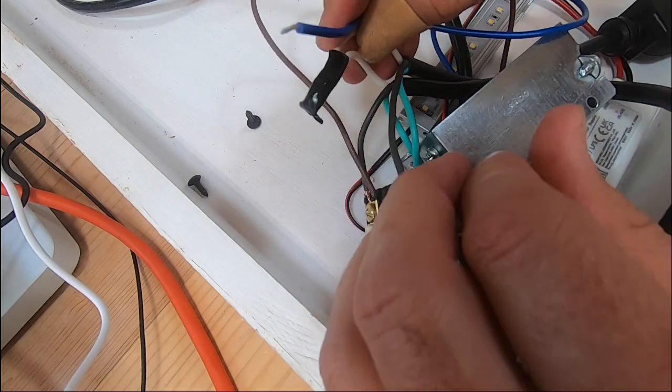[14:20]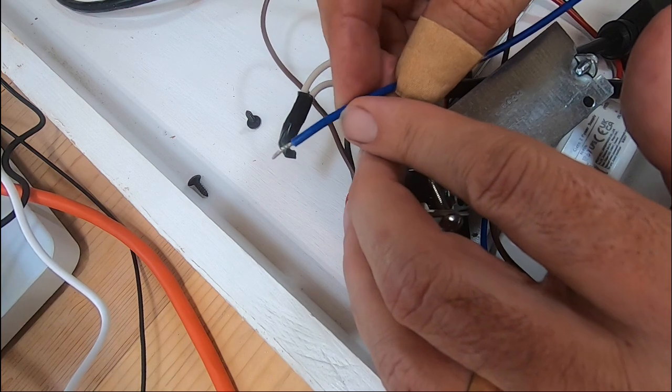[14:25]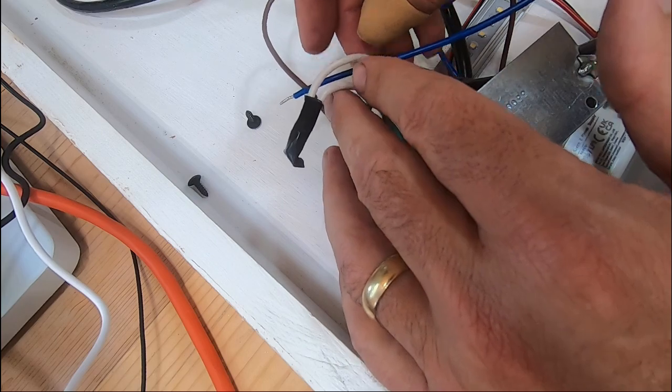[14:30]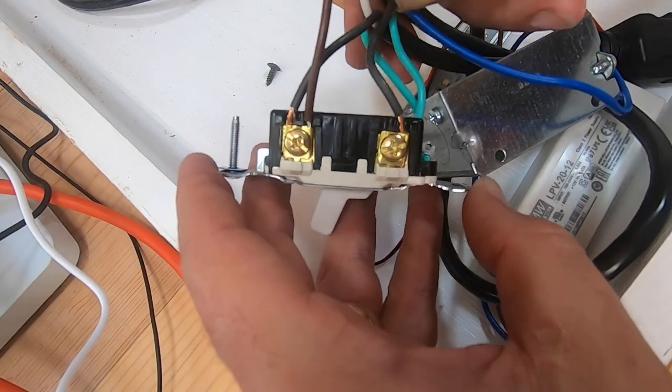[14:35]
Sorry, I know you can't see that. I had to get that little plate to fall away so that I could put a wire under it. Okay, and now we just need to strip this out a little bit further, and we'll put that in there with those. And so that's your wiring.
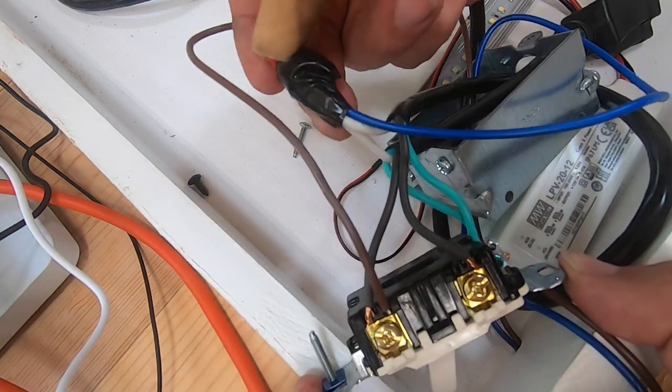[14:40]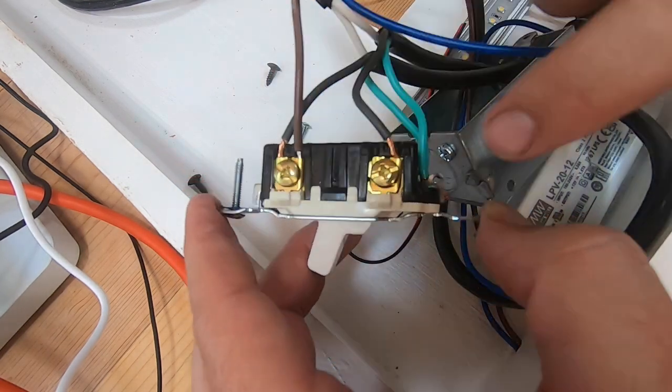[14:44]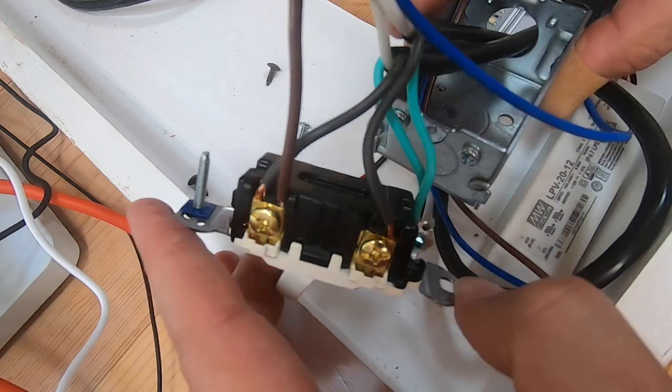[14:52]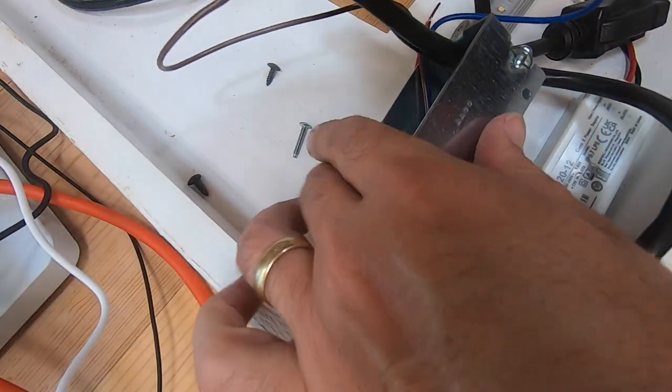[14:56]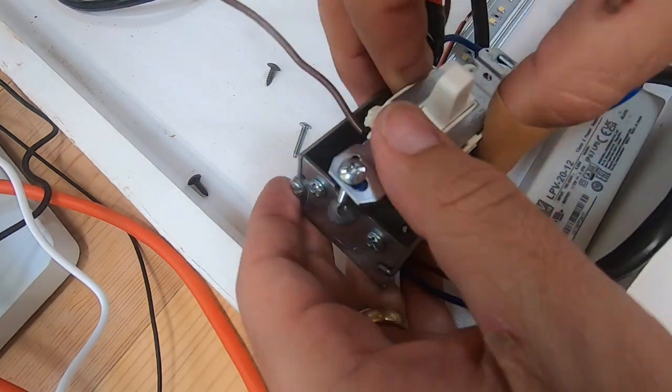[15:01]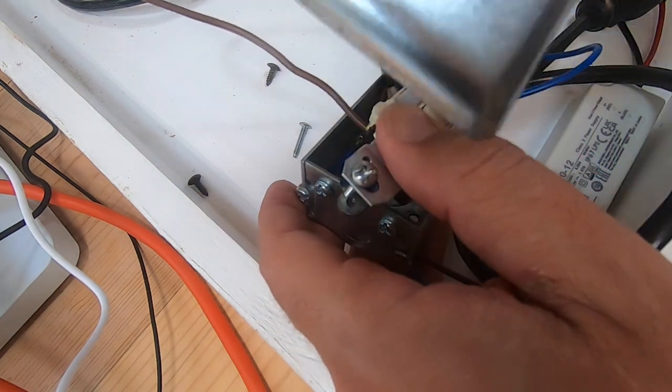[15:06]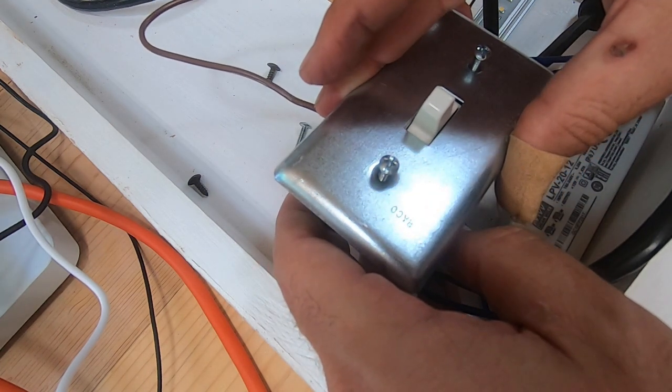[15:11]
So you've got your neutrals together. You got your hots on the switch, and you've got your ground together on the switch frame. Then that is going to go down inside the box. It'll be screwed down, and then the plate goes over the top like that.
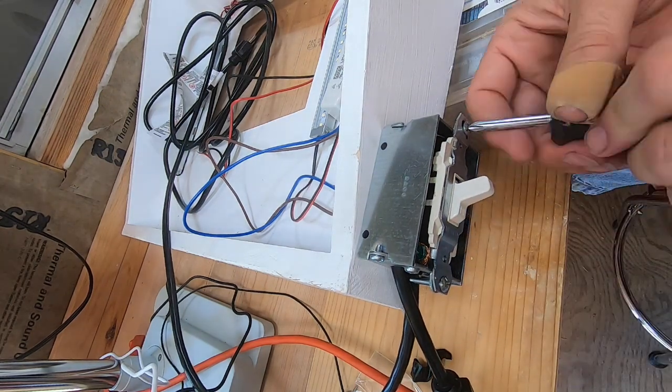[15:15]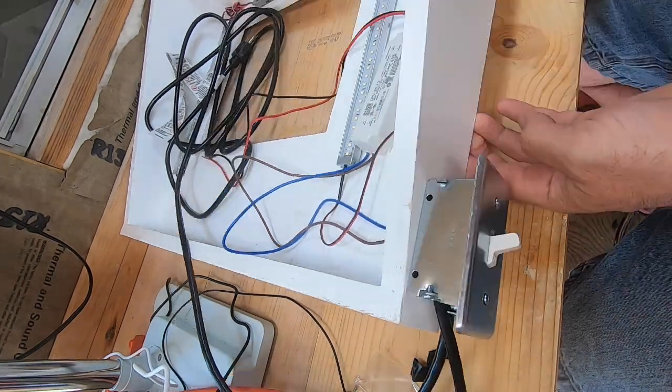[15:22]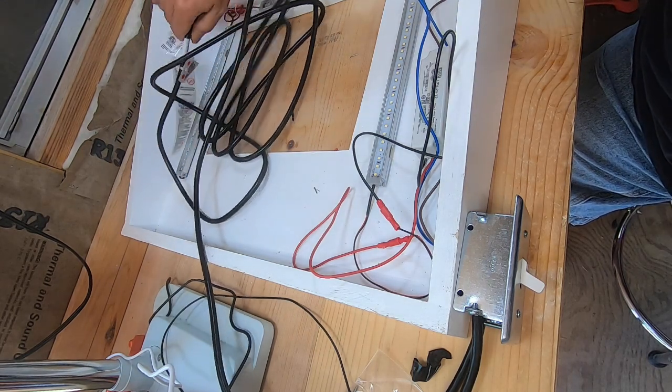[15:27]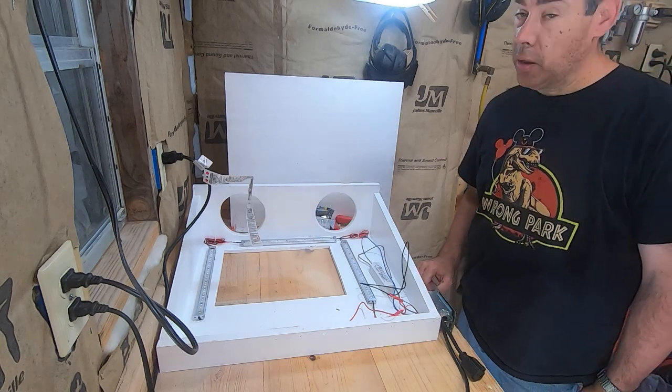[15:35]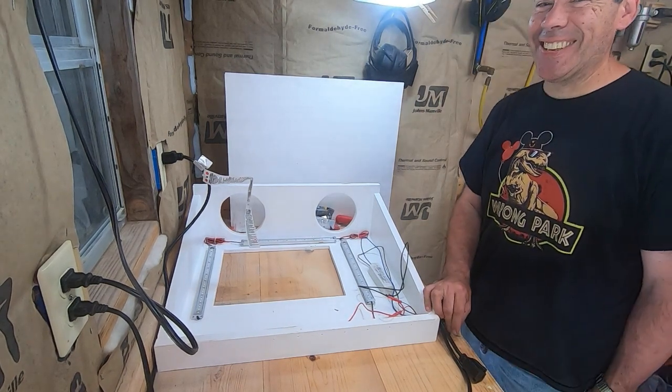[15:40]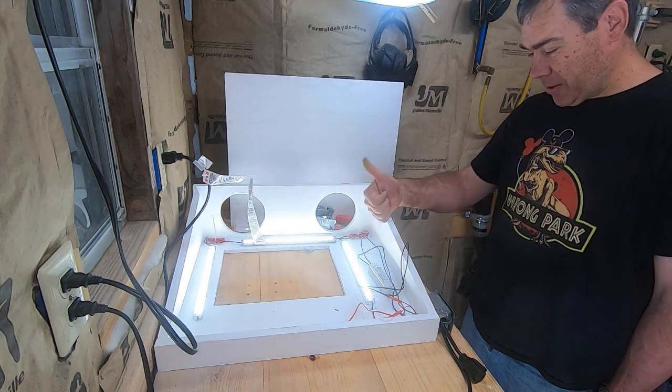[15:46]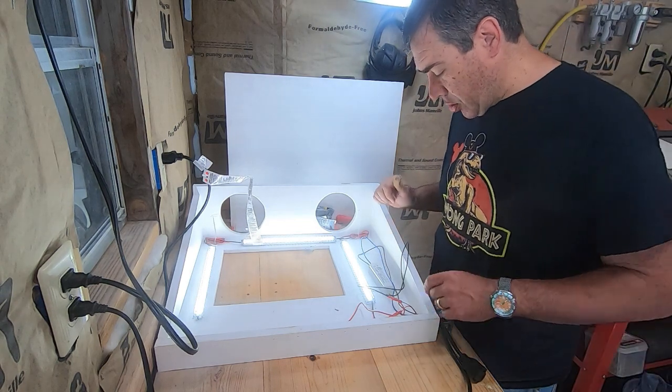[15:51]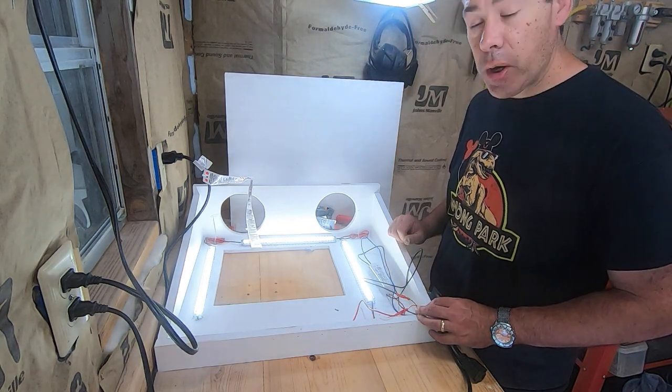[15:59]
Okay, so now the moment of truth. I'll plug it in and see if it works when I turn the switch on. All right, let's see if it works. Yay! Great success. All right. So now just have to clean up a little bit of wiring and get it tacked down in place so that it's not in the way while we're working. Sweet.
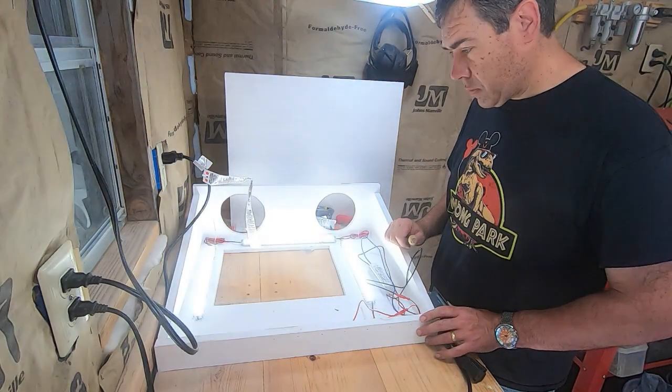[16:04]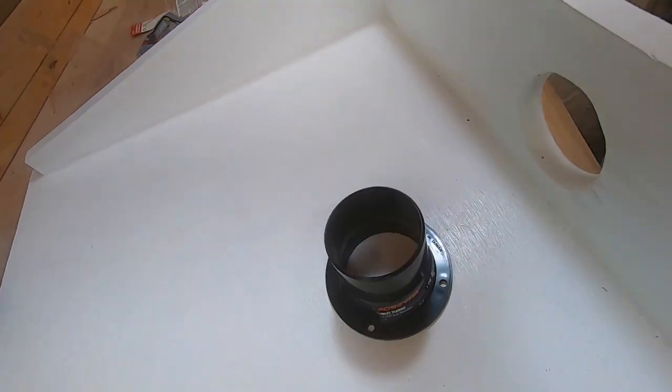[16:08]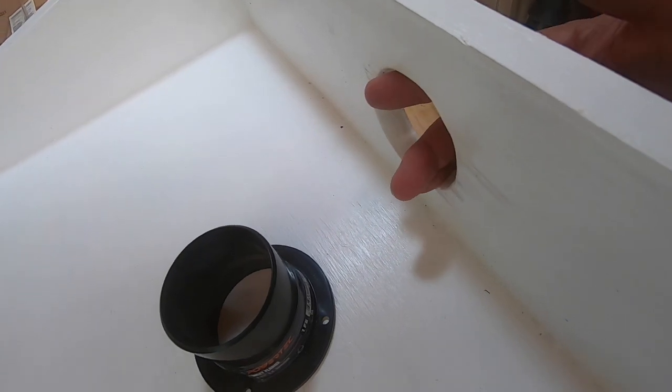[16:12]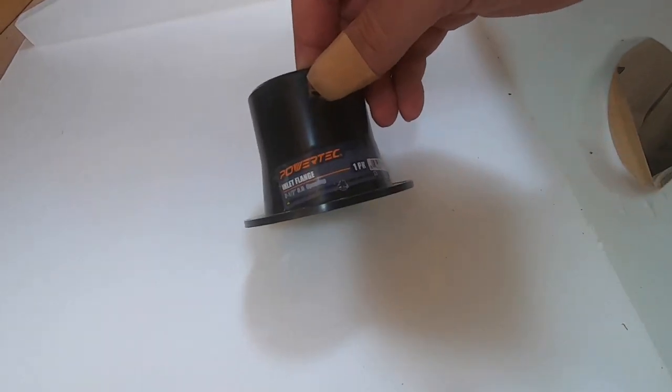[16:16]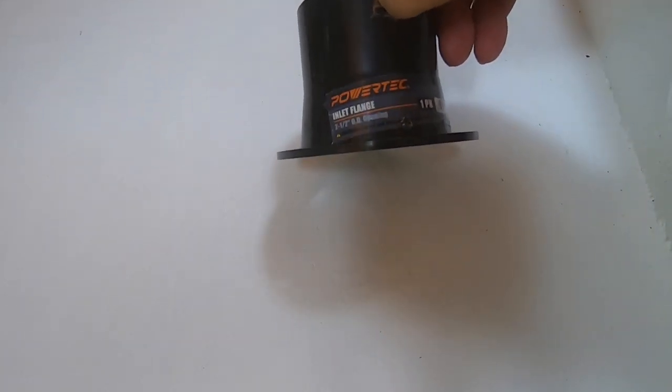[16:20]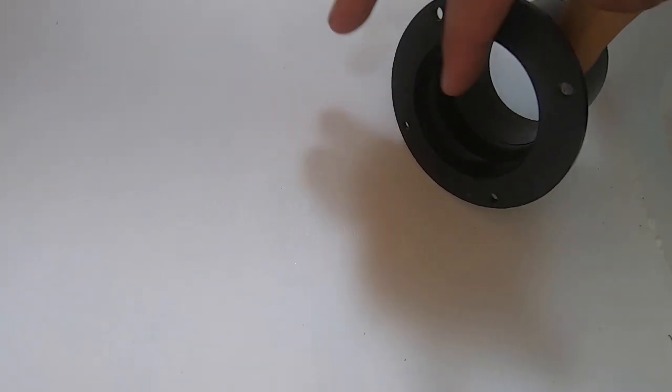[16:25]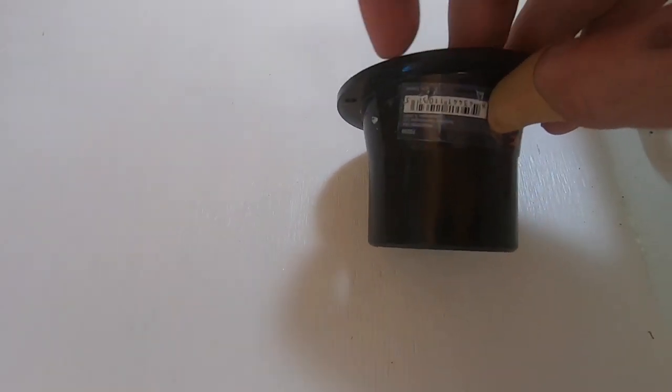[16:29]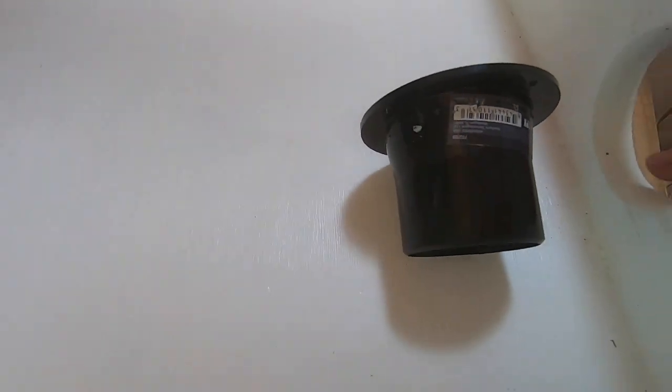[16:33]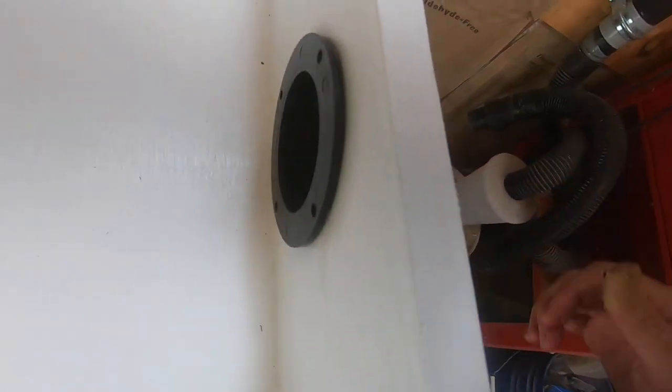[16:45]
And since you're going to need a way to handle dust, we've got our dust port hole cut in the back. And this is what I'm using here. POWERTEC brand inlet flange, 2.5 inch outside opening. And you can see, it's got a little bit of a taper on there, so I had to taper the edge of my hole a little bit. But she's a nice snug, there you go, nice snug perfect fit.
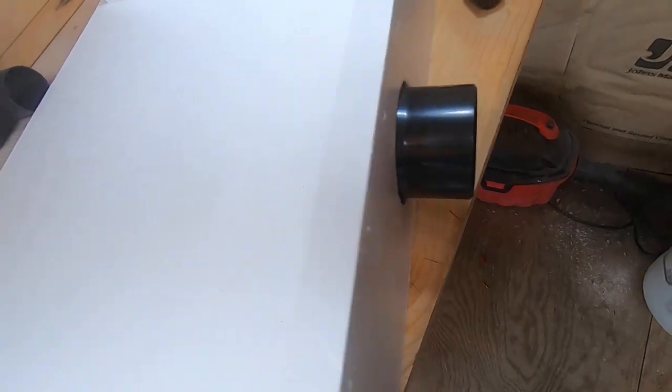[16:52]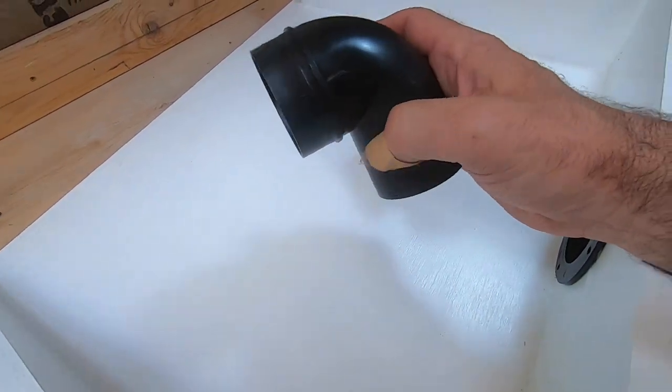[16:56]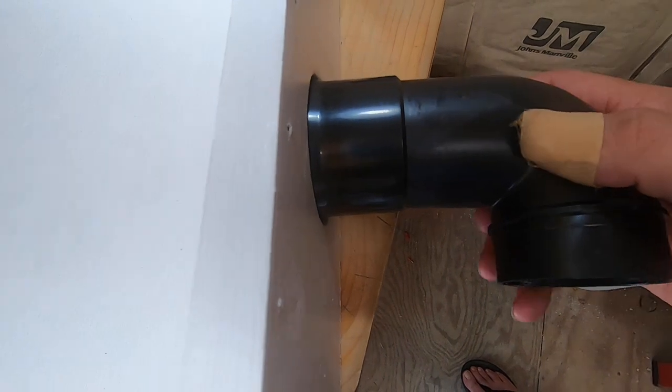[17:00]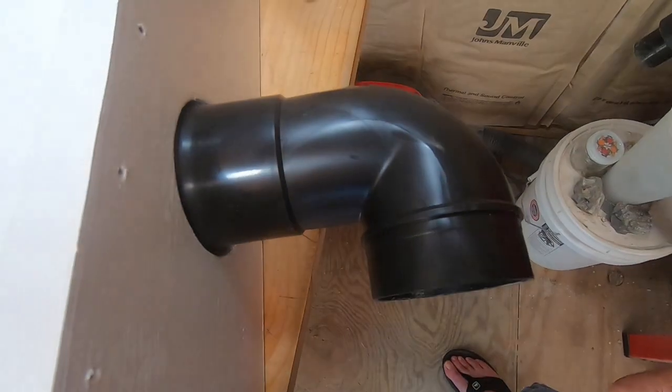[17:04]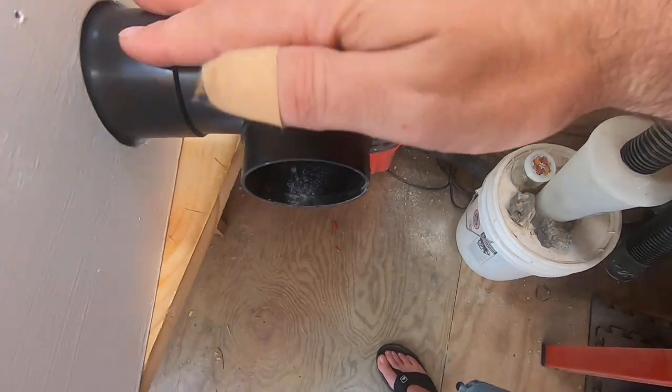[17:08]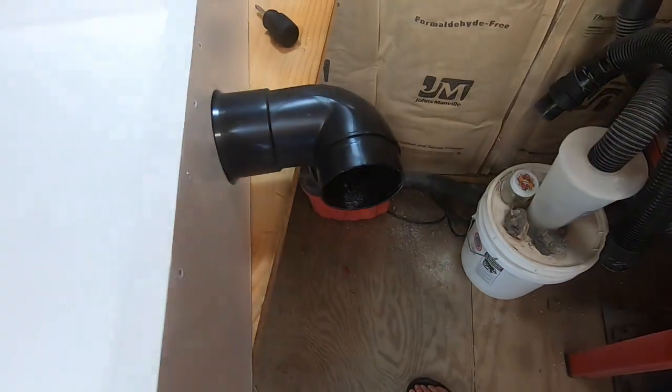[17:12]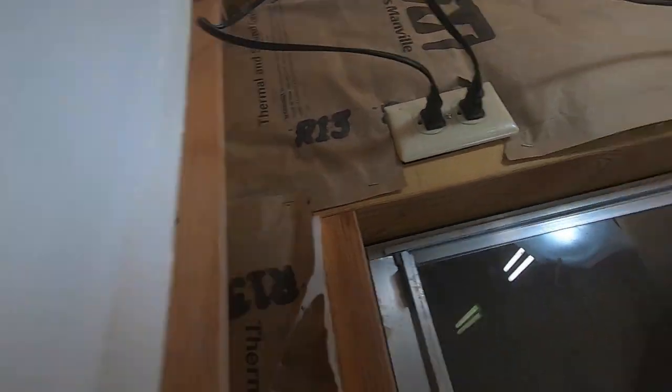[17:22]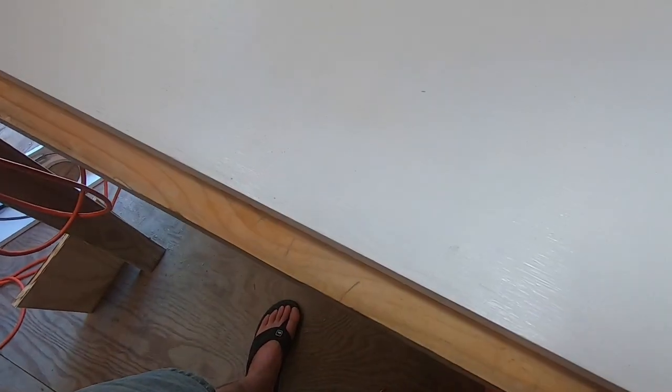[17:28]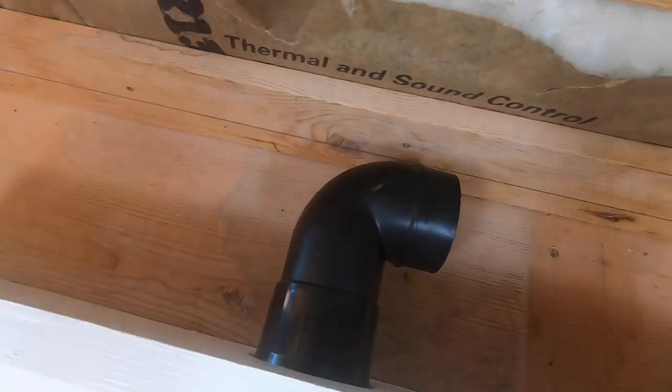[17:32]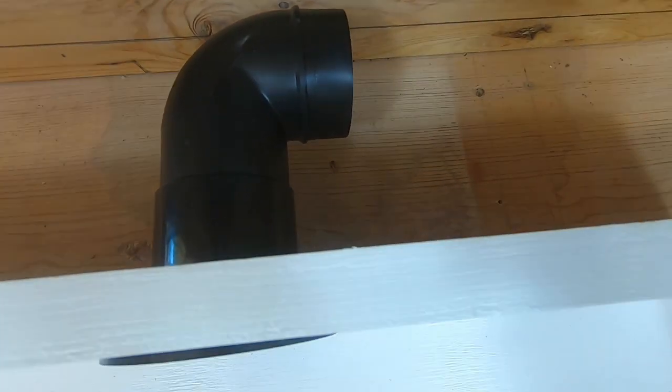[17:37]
Now I don't have a whole lot of room off of the back end, so I also have an elbow and it slips beautifully right in there like that to give me a nice tight 90, because putting the hose in here, that hose doesn't want to make a tight turn and it was getting pretty cramped back there in the back. Let me show you. So that way I can take this all the way out to the edge or even a little further back, and I've got plenty of room back here on the back.
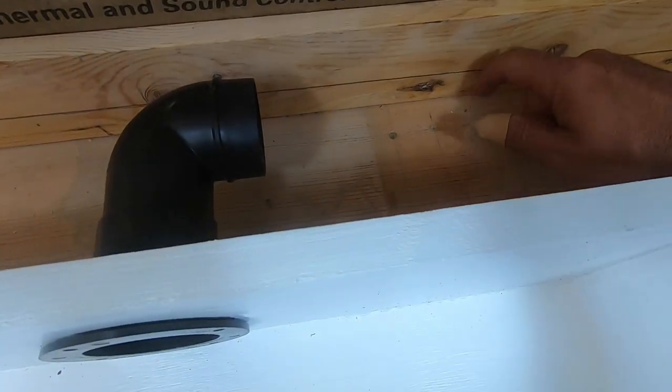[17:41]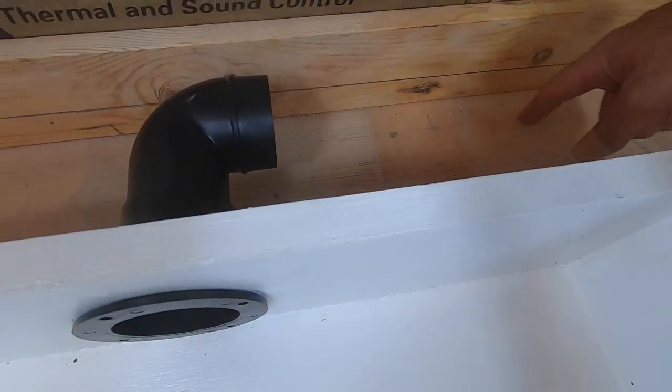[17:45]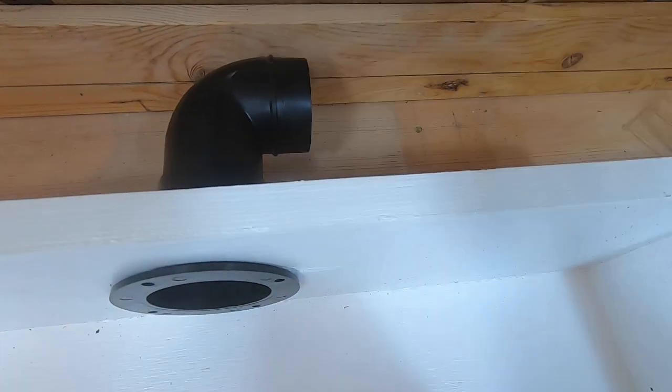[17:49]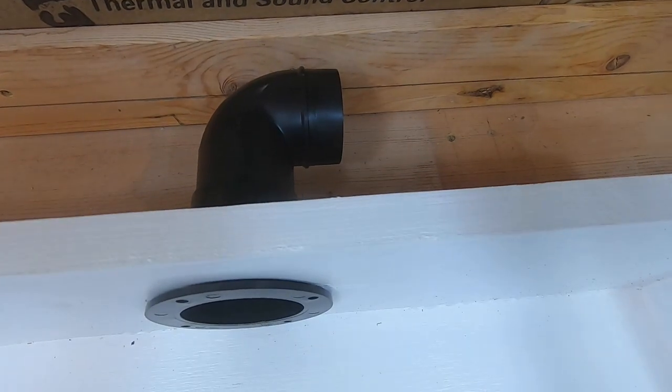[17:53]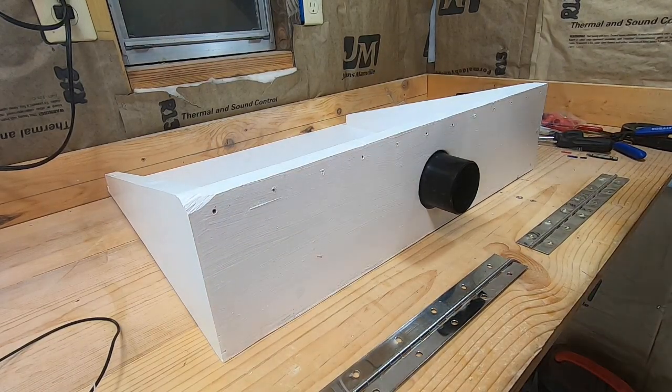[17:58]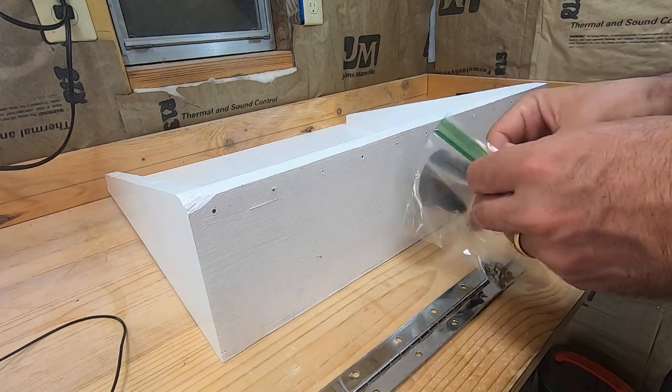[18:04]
One of the last things I'll have to do is to drill a hole somewhere in here. I may even do it directly below this, and that way I can just run my vacuum hose straight down through there. Okay, and now just start reassembling. Where's my screwdriver? And my bag of screws.
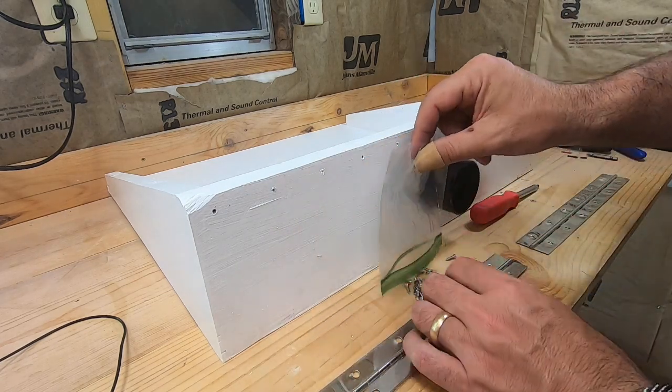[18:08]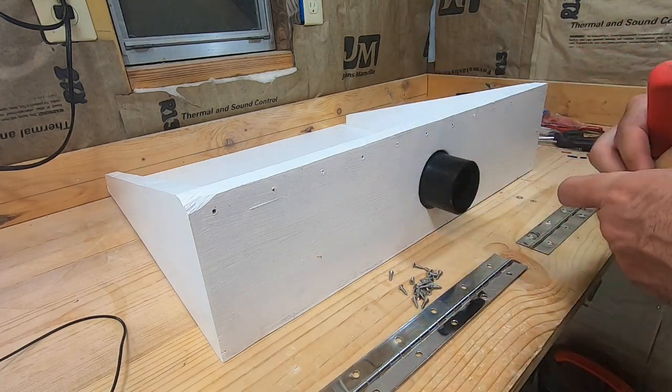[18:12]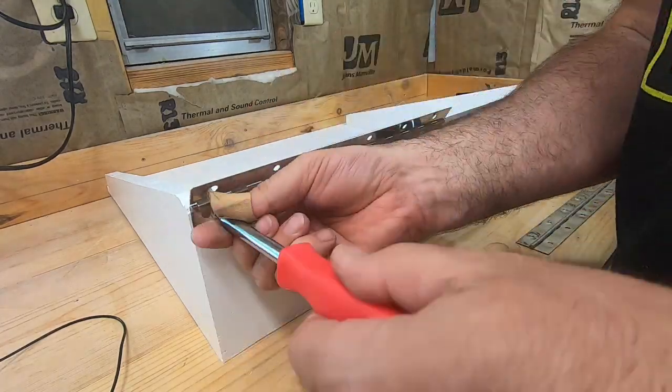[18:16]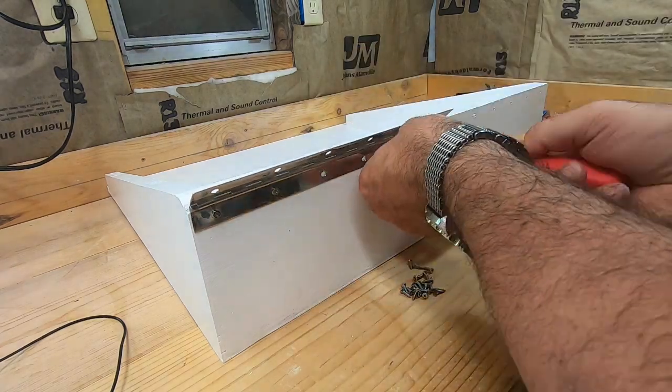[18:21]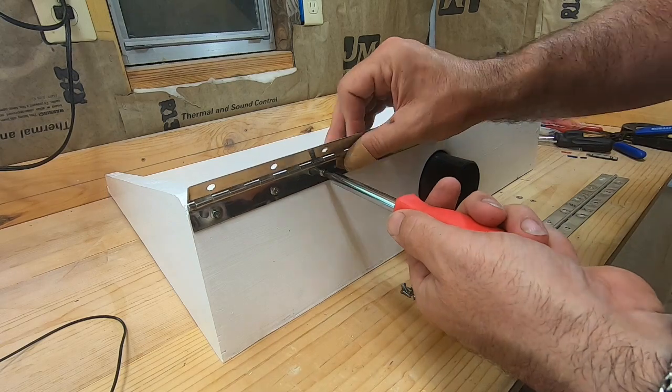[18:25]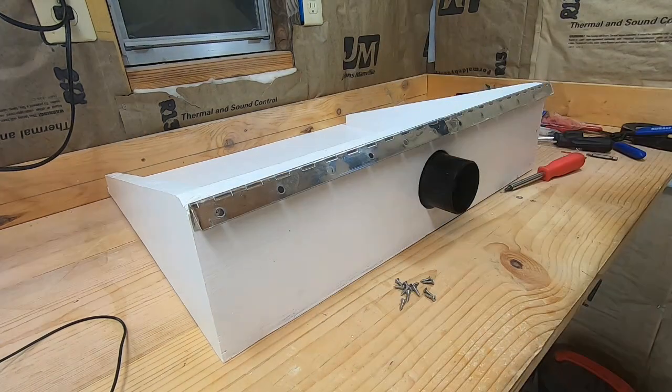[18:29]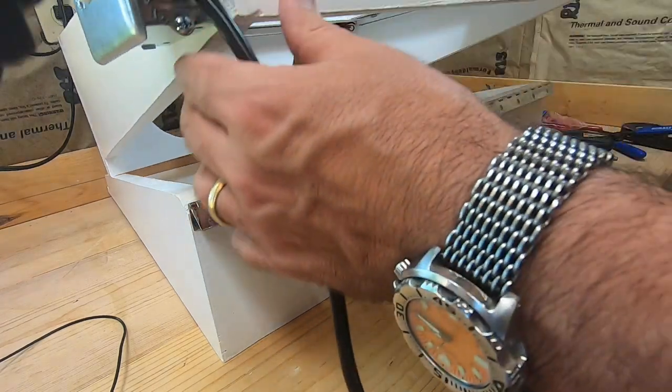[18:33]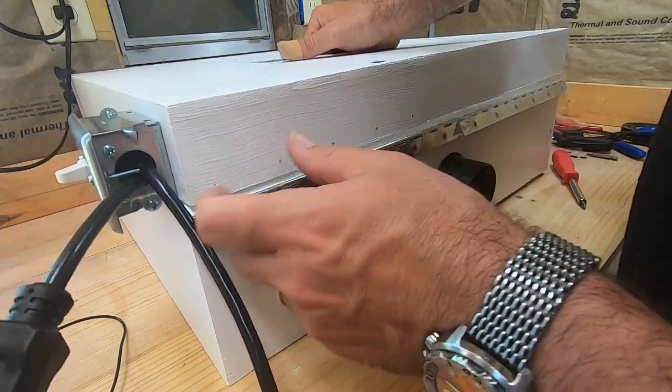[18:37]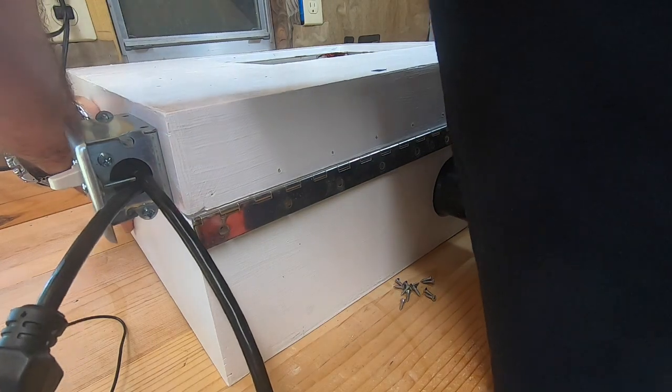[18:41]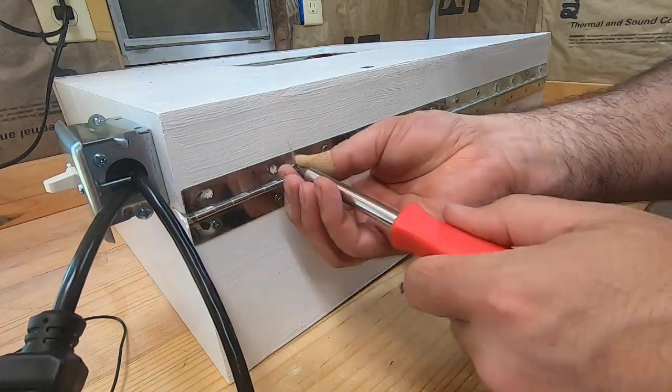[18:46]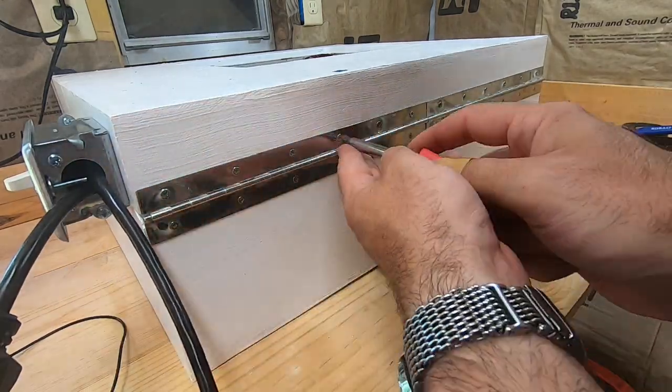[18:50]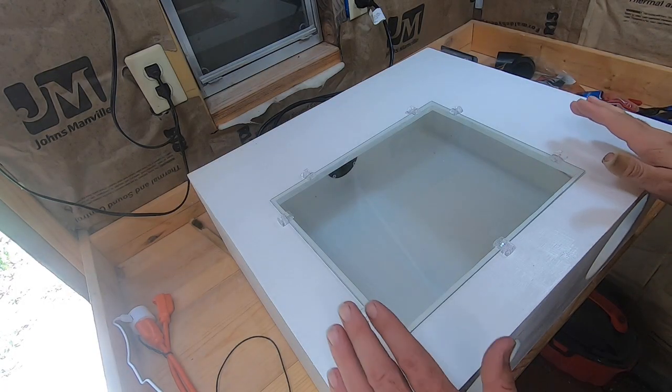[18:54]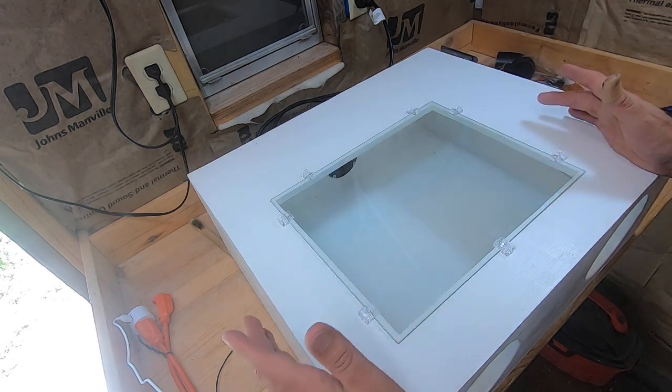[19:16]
So the glass plate that I chose is an 11 by 14. It's a standard size that you can pick up almost anywhere in picture frames, document frames. It's a 11 by 14 is really easy to find, along with other sizes. 11 by 14 is the one that I chose, and you need to make sure that your hole is just a little bit smaller, so the actual opening should be about 10.5 by 13.5 if you're using this glass.
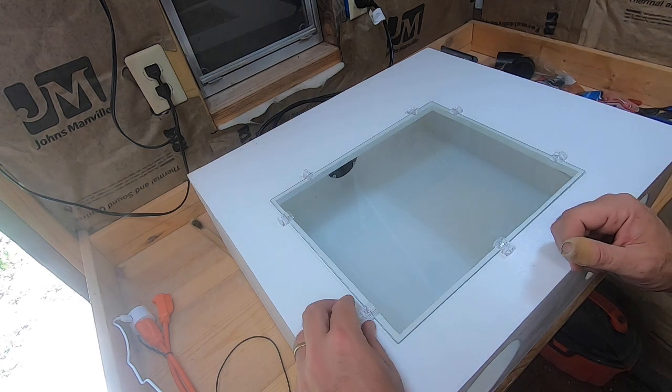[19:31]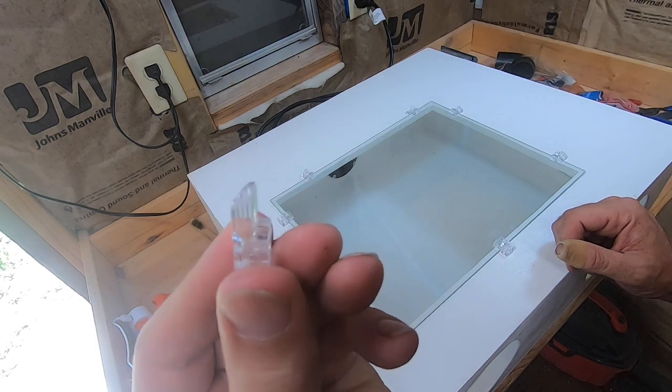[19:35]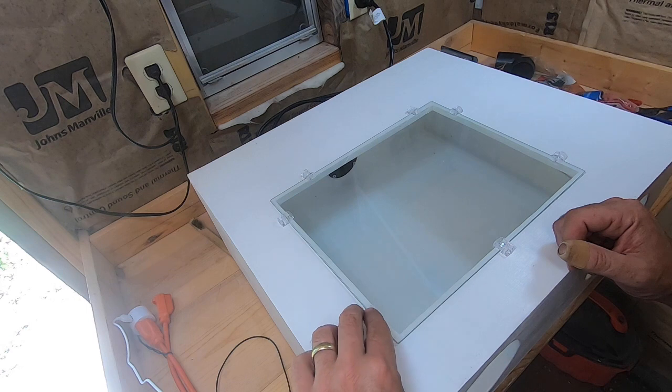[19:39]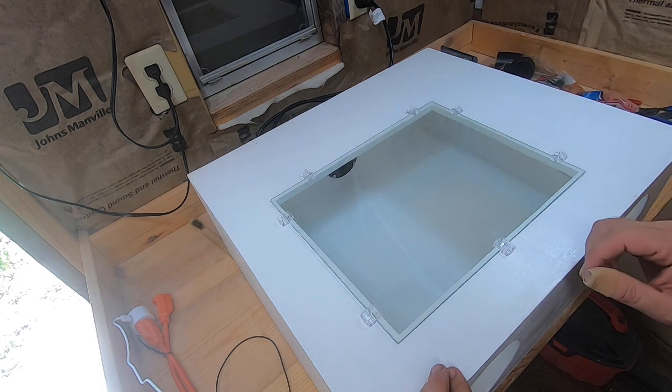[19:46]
And then we're just going to use these little mirror mounts. They'll just sit on there right like that and hold that in place. We'll get those screwed down, and then this part of the rebuild will be done. That box will be ready to go.
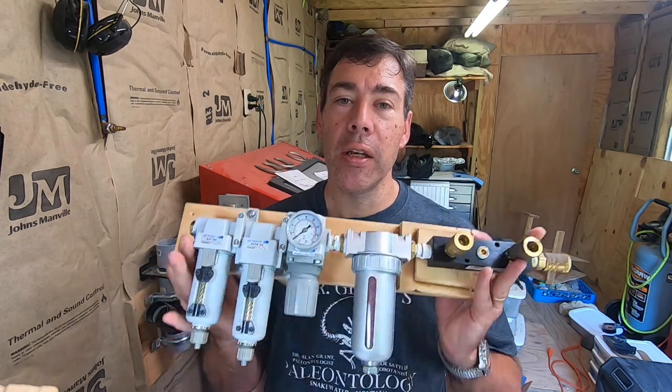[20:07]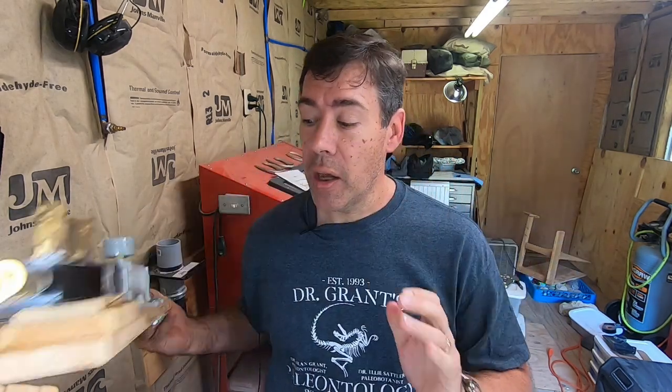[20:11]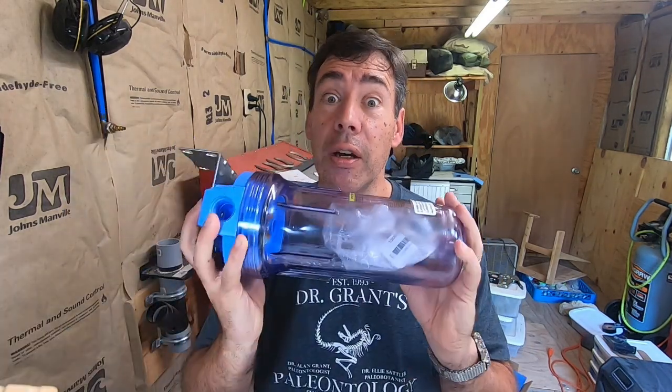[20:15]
Hopefully you got some good ideas on how to make your own box from this video. And if you enjoyed it, then stick around for the next episode, where I am going to upgrade my air system. I'm going to take this apart and I'm going to supercharge it with this. Stay tuned. Thanks for watching.